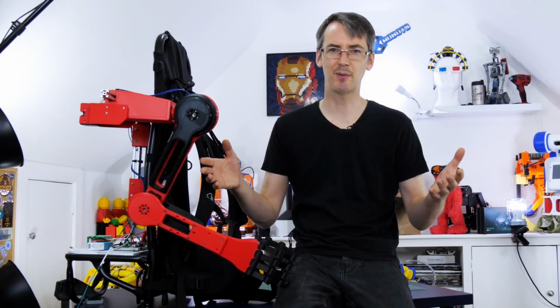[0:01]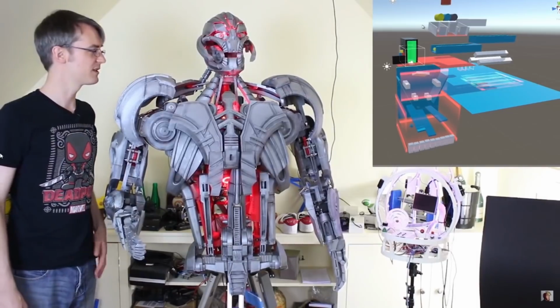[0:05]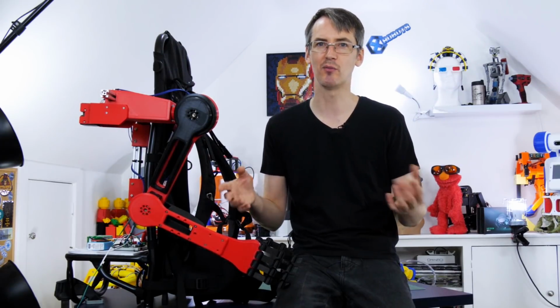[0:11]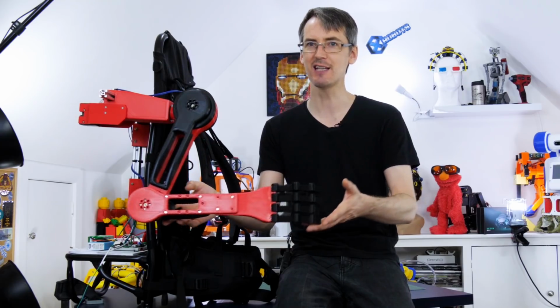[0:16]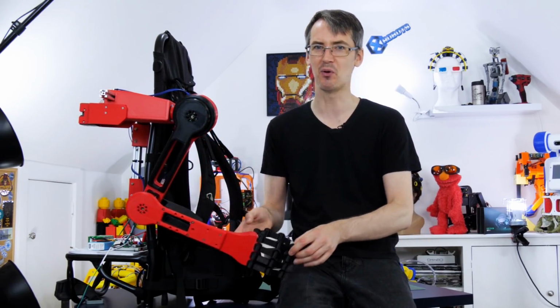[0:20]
I've been thinking about building a project like this for quite some time, all the way back to when I did Project Ultron, which some of you may remember, and that had similar intentions initially. What I've been wanting to try though is testing a proper machine learning AI to see if I could automatically control a prosthesis using body posture and the position of my other limbs as inputs.
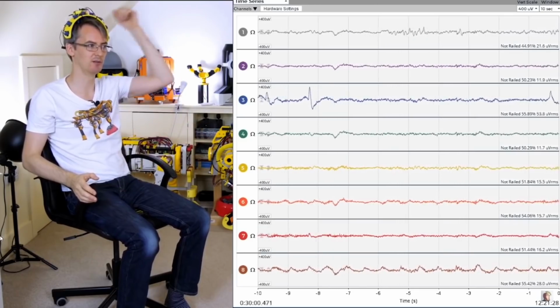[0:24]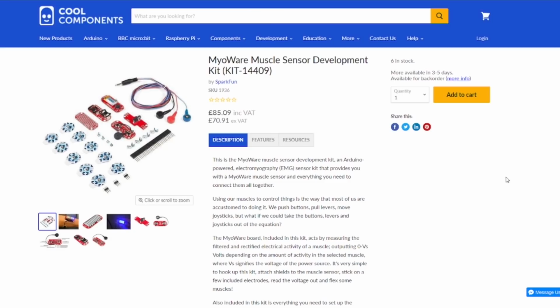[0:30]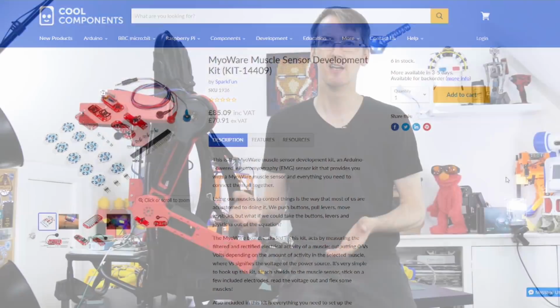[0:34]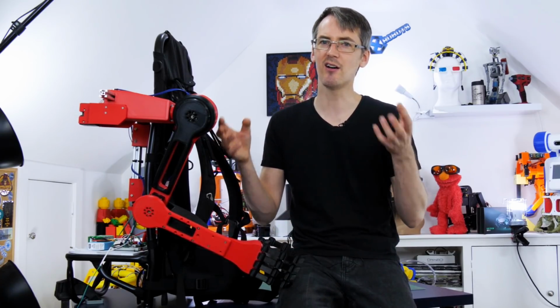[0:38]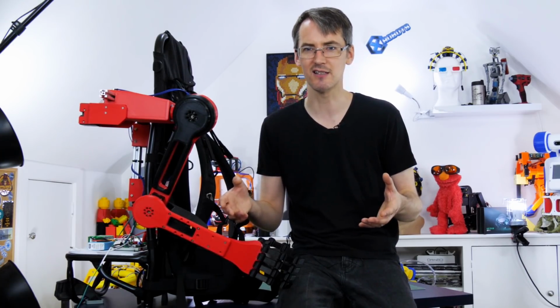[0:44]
This is because getting repeatable data from a brain-computer interface is quite tricky, without embedding electrodes in your head at least, and although there are already electromyography solutions to read muscle and nerve signals such as the MyoWare muscle sensors, it seems like machine learning could play a part. This project is highly experimental and this video is about the initial R&D. I'm intending to continue with the project along these lines after this video, and I'll talk some more about that at the end.
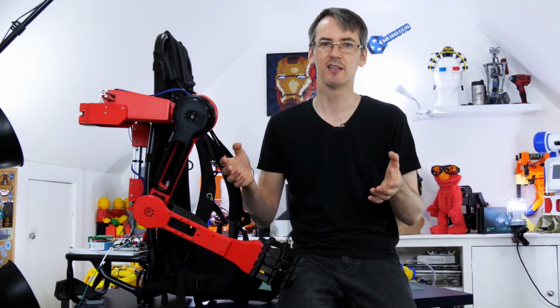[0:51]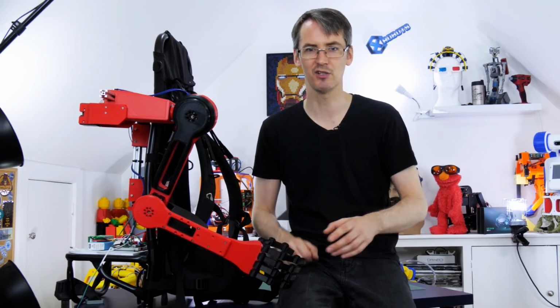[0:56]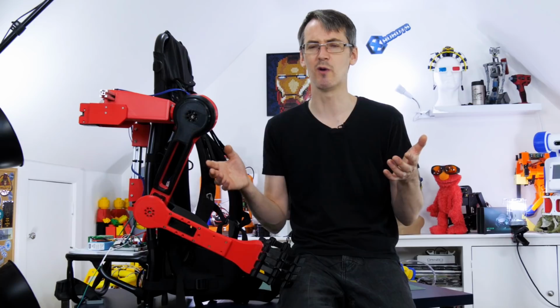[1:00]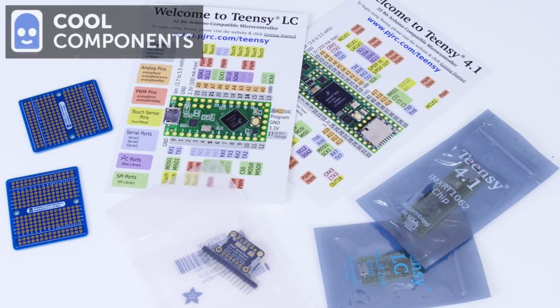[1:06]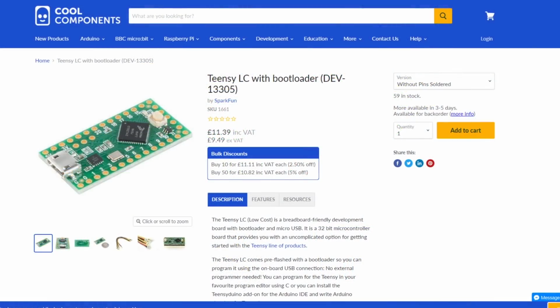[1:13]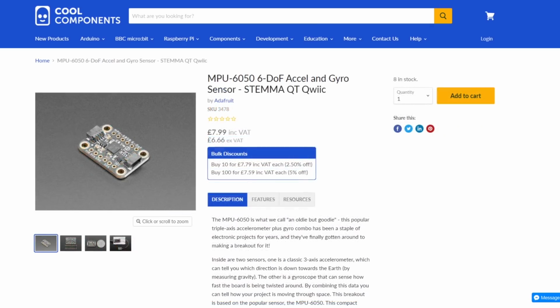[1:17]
So in order to start the project, first of all, I needed to make some sort of wearable motion capture suit so I can get all the data from my body motions into something to process it. Thanks to Cool Components for providing the electronic components for this project. This includes several microcontrollers, including a number of Teensy LCs, a Teensy 4.1, and the Adafruit MPU 6050 inertial measurement units.
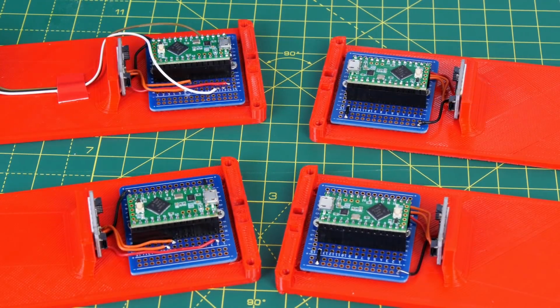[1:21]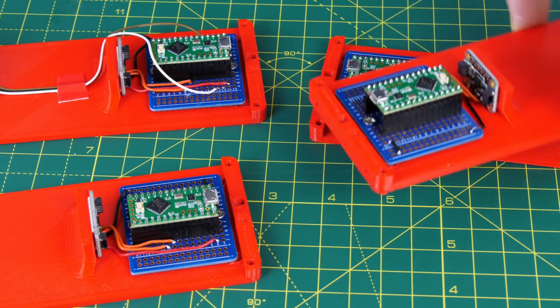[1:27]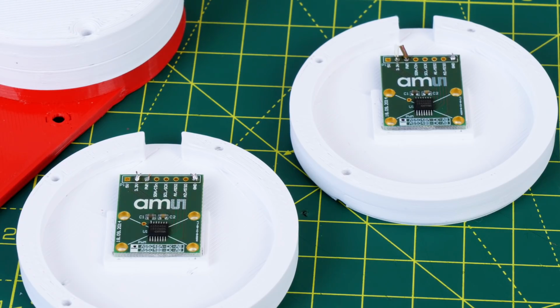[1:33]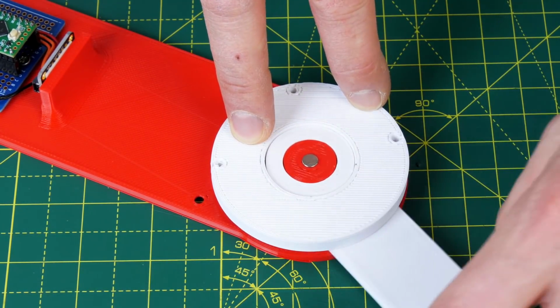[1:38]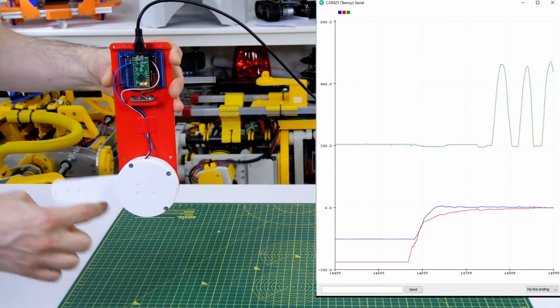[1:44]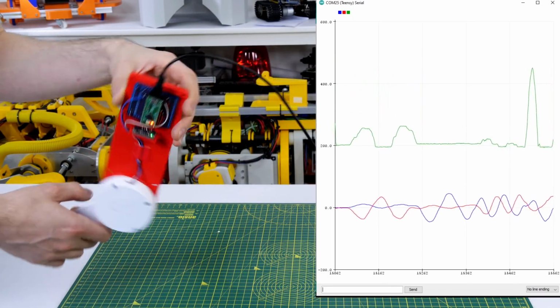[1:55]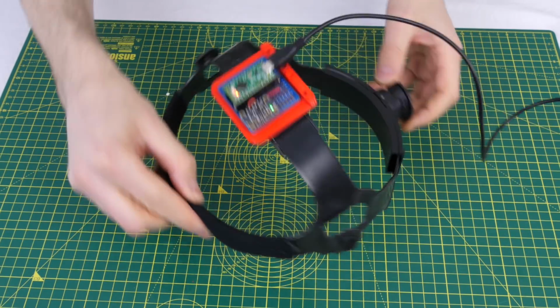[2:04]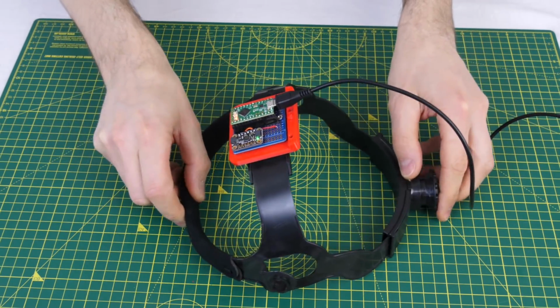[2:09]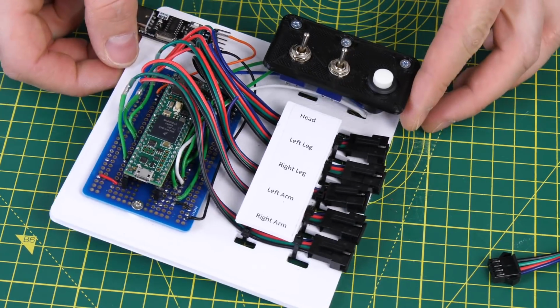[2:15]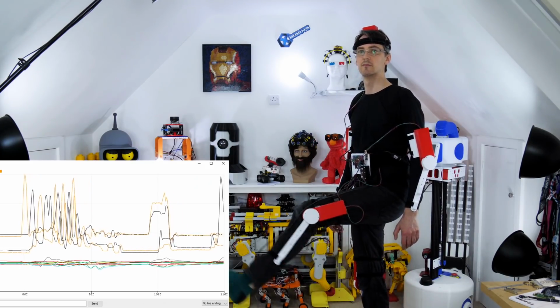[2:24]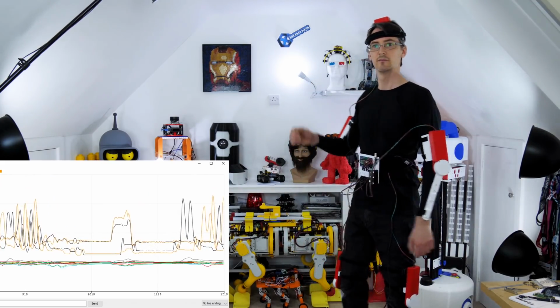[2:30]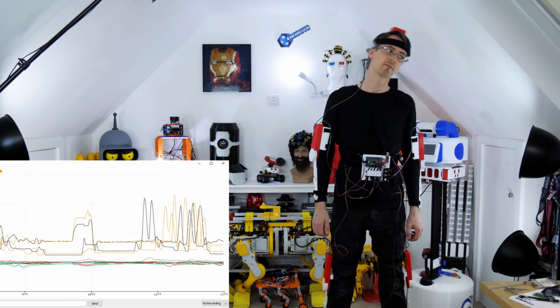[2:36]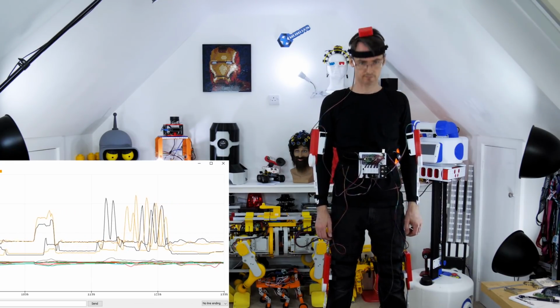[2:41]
I also need to record my head motions, so I've got the inertial measurement unit, exactly the same as the others, but without the joint encoder, attached to a headset. All of that data gets sent to the Teensy 4.1, again mounted on Core Components Perma Proto, and each one of those plugs into a connector, so that I can plug in all of the four limbs and the head. And all of that makes a rudimentary motion capture suit, which I can wear, recording the motions from all of my four limbs, my arms, my legs, my joints of my limbs, and the position of the limbs, as well as my head position. All of the data I've got in the visualizer there is coming from the Teensy 4.1, where all the data is sent. At the moment, I'm just outputting it to the serial terminal for debug.
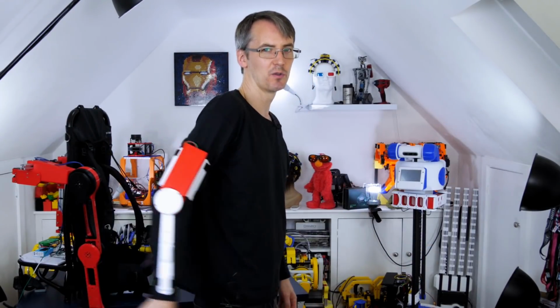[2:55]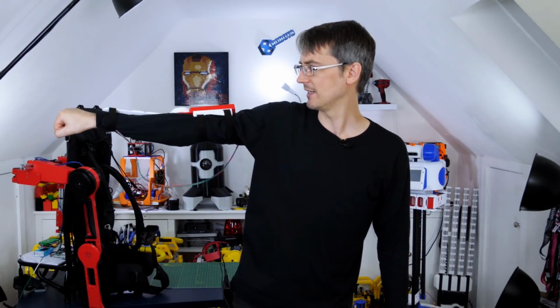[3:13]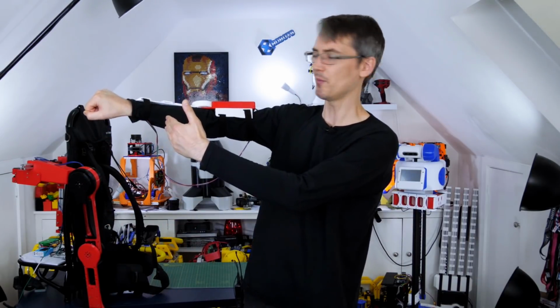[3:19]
Now, those of you paying attention will realise there's some problems with this. Of course, I'm only recording two axes in my upper arm, which are this one and this one. And of course, we also have a third one, which is rotating the arm, which I'm not recording. So we've got quite limited data there. The other issue is, if I put my arm right out, then the inertial measurement unit axis in this direction can measure that with no problem. But the other axis that's trying to measure this gets really confused if I roll my arm a little bit and then flips over and goes all crazy, because at that point it tips right up, it doesn't really know what it's doing. So we've got some caveats there and some limited range of motion we can record.
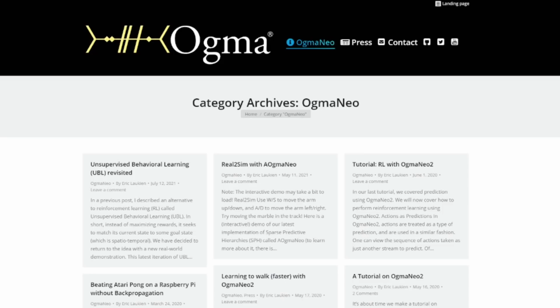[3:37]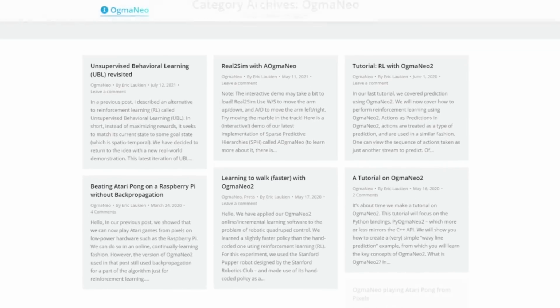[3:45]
But now we need to get all of that data and decode it with an AI to work out what my right arm should be doing essentially when it's missing from the other body motions. So I sought help from Ogma Corp, which is a startup company that makes machine learning software. Their AOGMA Neo software is lightweight, so it can run on low power devices, and there's even a version that can run on a microcontroller.
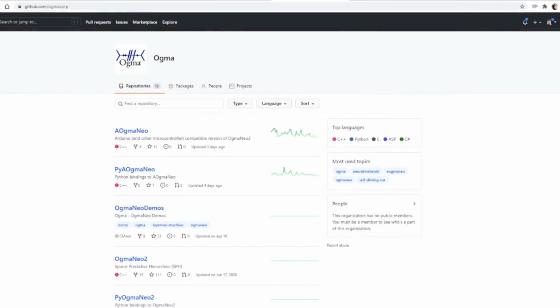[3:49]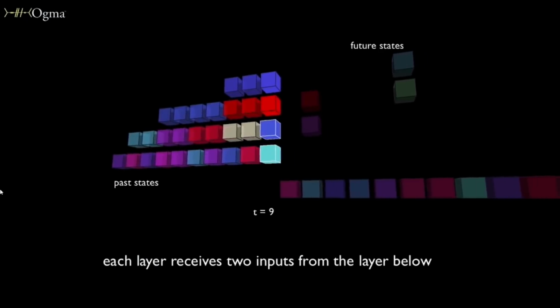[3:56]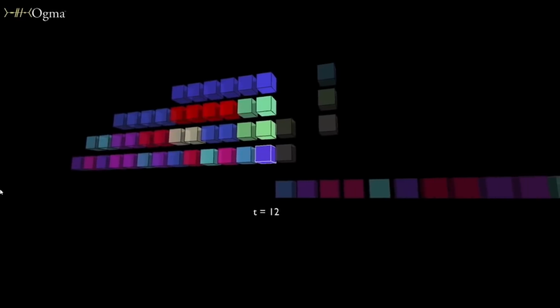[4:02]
The software is open and available on GitHub. It's free for personal use, although commercial use requires a license. Ogma Corp have built their software on neuroscience, matching the power of state-of-the-art deep learning algorithms, but with a self-organizing structure, flexibility, and efficiency found in the human brain.
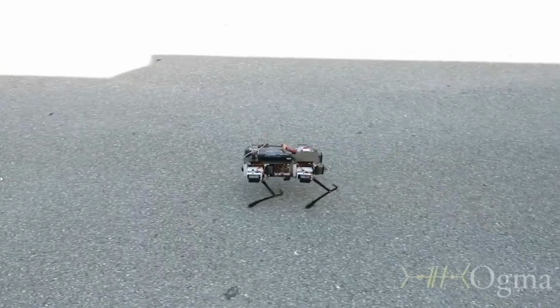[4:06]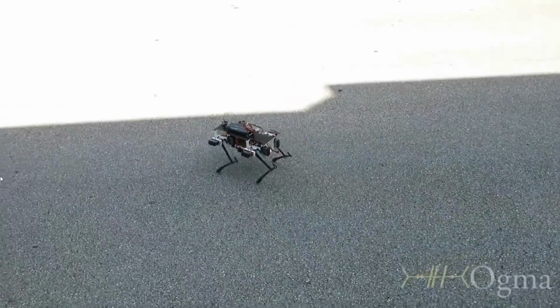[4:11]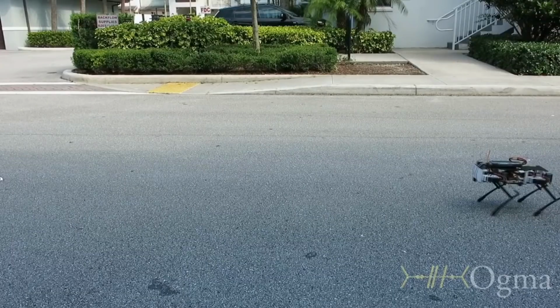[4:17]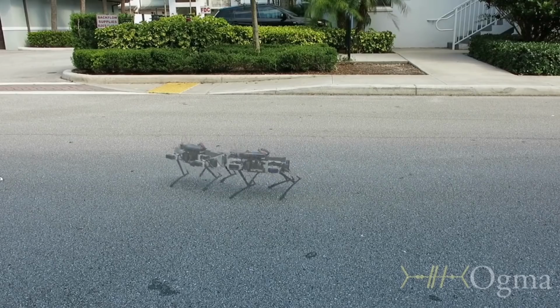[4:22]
Generally, AOgmaNeo is used for reinforcement learning. There are lots of demo videos in the Ogma Corp YouTube channel demonstrating emergent behaviour from robots using the software. This includes a robot dog learning to walk better. It's using an optical mouse-style sensor for velocity feedback, and then learning which changes to the kinematics of the robot make it go faster.
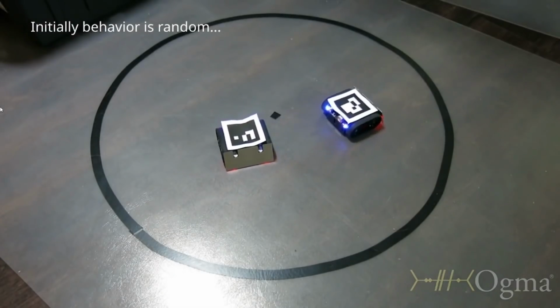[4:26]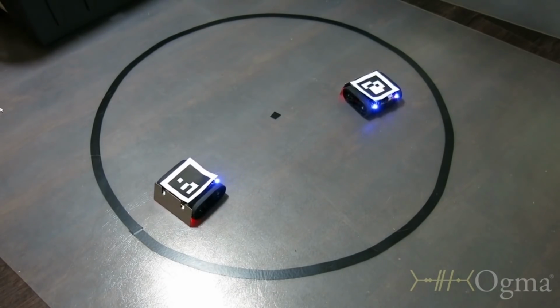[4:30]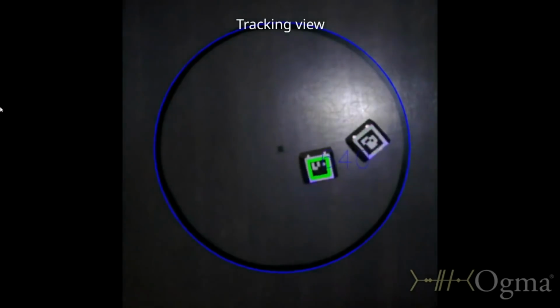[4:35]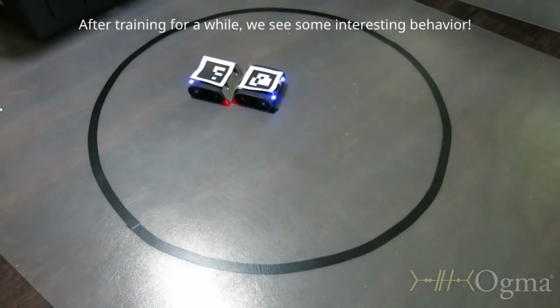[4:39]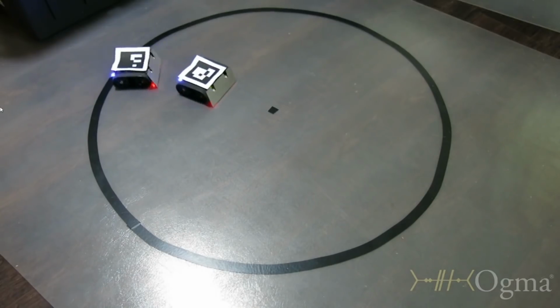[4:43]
The other great demo is a pair of sumo bots which have their positions tracked using machine vision and an overhead camera. They get reinforcement feedback when various actions take place, such as the other robot leaving the ring. Initially, the behaviour is random, but after several rounds of training, they learn how to fight and tend to try to push the other robot out of the ring.
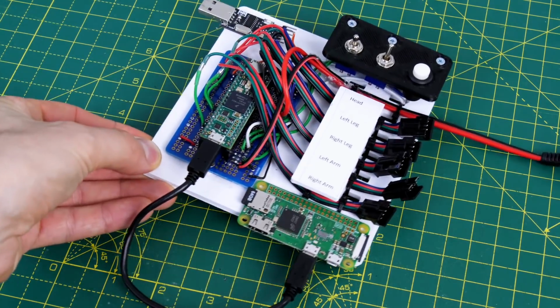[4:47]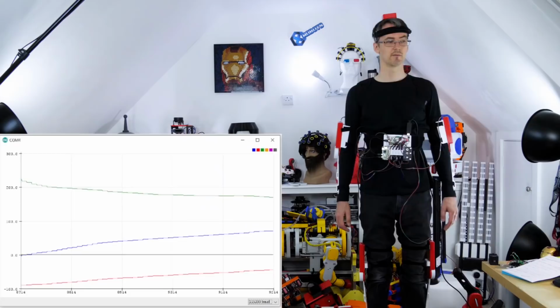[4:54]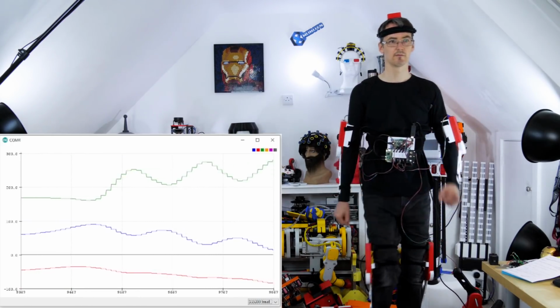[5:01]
So, I added a Raspberry Pi Zero to my electronics. This will receive the data from the Teensy over serial, process it using AogmaNeo, and send it back to the Teensy again. So with quite a bit of help from Ogma Corp, we fed the data from all of my limbs and head motions into an AogmaNeo hierarchy.
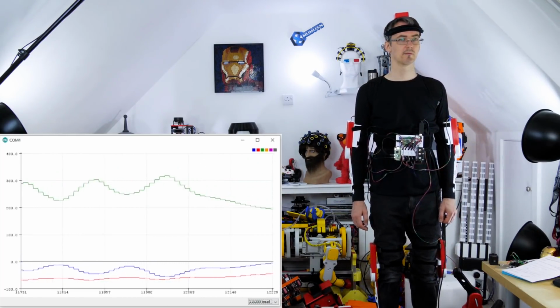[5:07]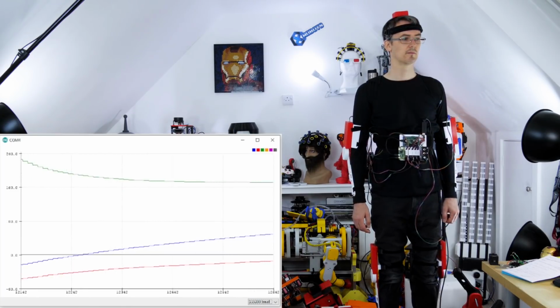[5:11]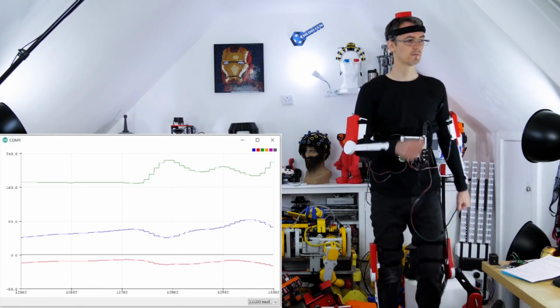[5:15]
I tried training the model by doing some fairly distinctive repeated motions, but I also spent some time during the training standing still, because we also need to train the model to understand what to do in that case. The waveform you can see is from my right arm only. The green line at the top is my right elbow joint, the red and blue lines are the two IMU axes in my right arm.
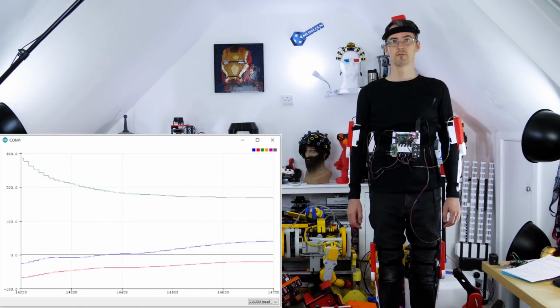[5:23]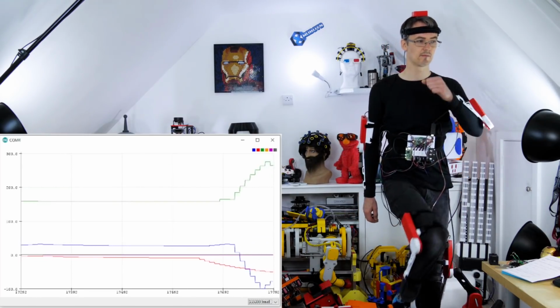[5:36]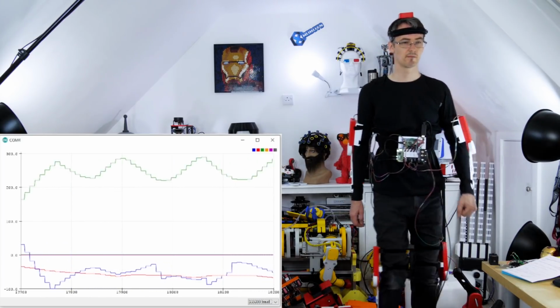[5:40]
After doing a short piece of training, I switched the system over into playback mode. This should now allow AogmaNeo to predict what my right arm should be doing, even though I'm now no longer moving my right arm. It can predict this based on my upper body motions through the training I did. And you can see that we get a very similar output to the real motions of my right arm, even though my right arm is no longer moving.
The data is quite blocky looking though, and that's because we're only running at about 10 Hz. That was about the throughput limit for the Raspberry Pi Zero running AogmaNeo, but we essentially get data that looks okay, and we can smooth the data out later with some post-processing. You'll also notice a few random spikes here and there, but we'll filter these out later too.
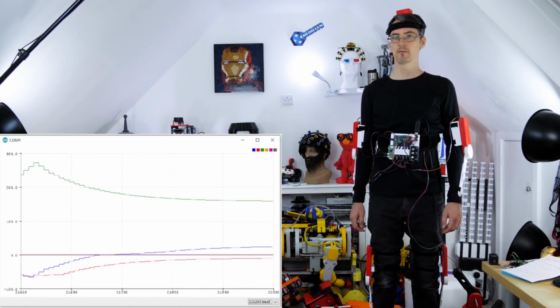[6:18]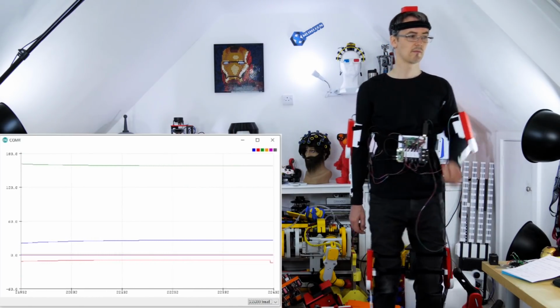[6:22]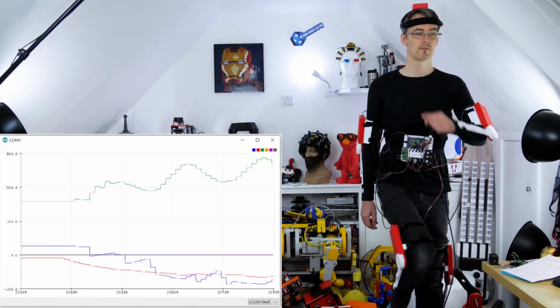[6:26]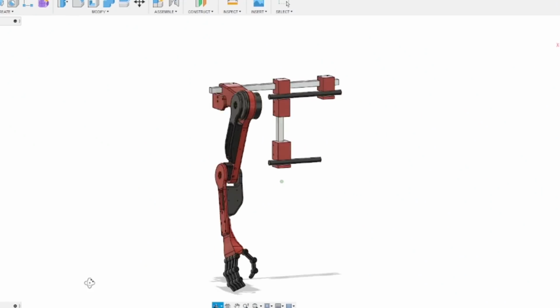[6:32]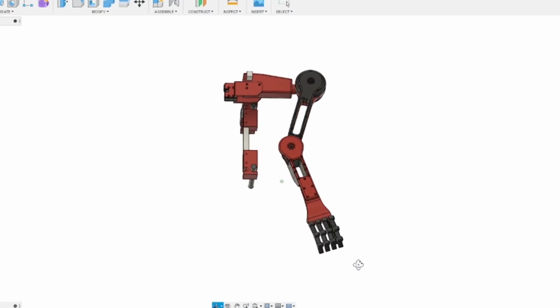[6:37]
If I stop moving, then the predicted right arm data should settle at a rest position, just as we trained it. And if I start the motions again, then off it goes. The next stage, of course, is to build an actual robot arm I can wear on a backpack and see if the output motions actually match what my right arm should be doing.
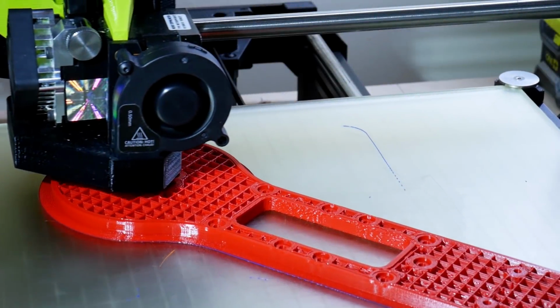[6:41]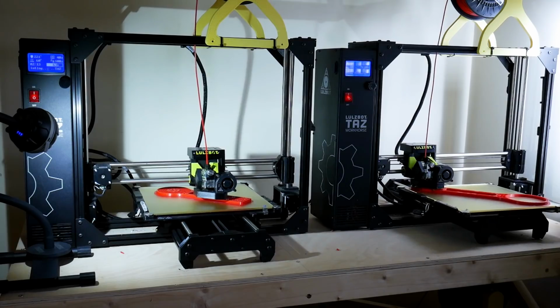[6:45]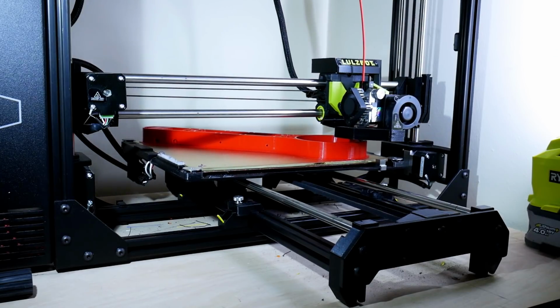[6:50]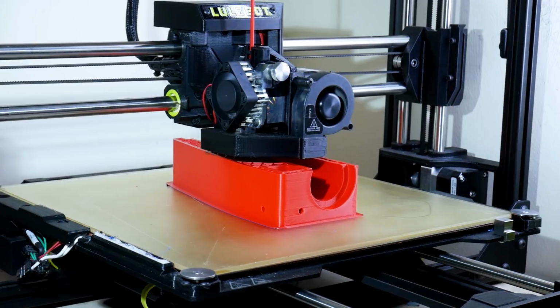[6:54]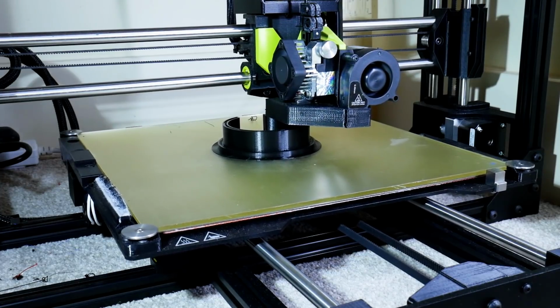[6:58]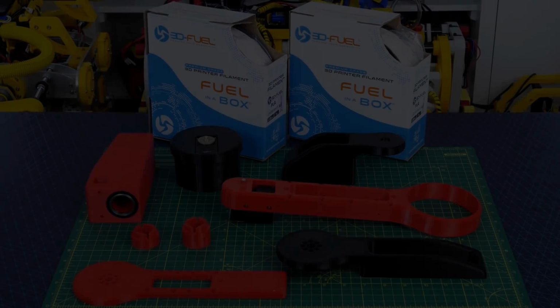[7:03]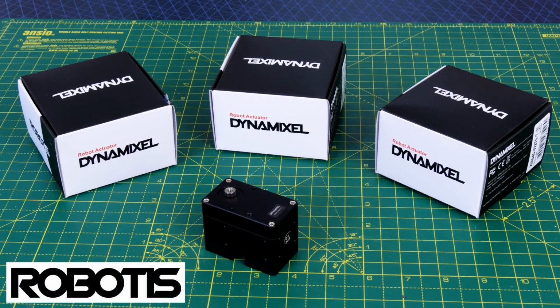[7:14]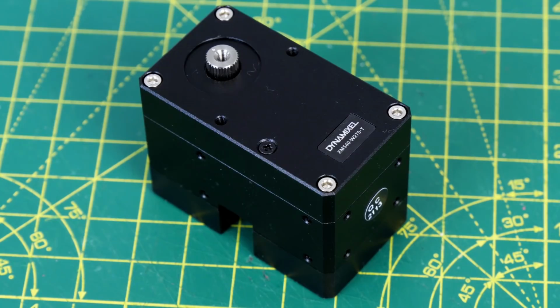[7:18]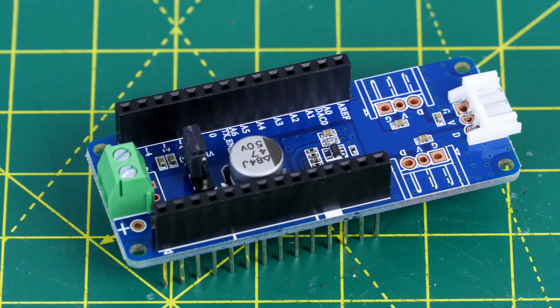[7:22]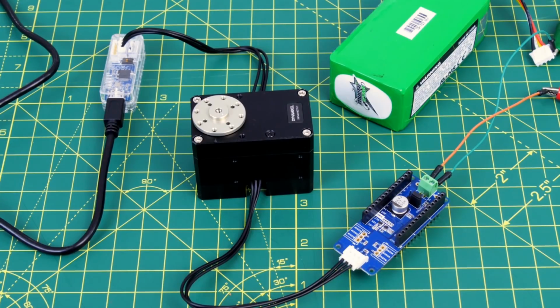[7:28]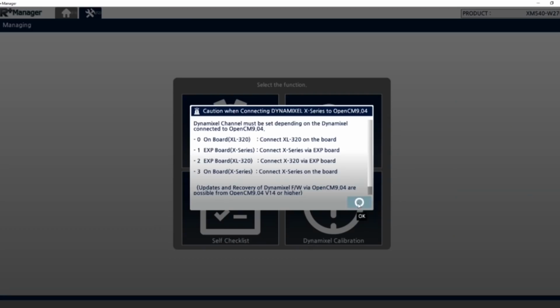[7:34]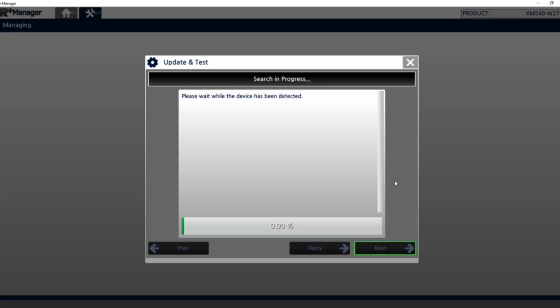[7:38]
And also thanks to Robotis for the Dynamixel servos that I'm using in this project. I've got three XM540-W270-T servos, and I've also got the MKR shield for Arduino, which runs at 3.3 volts. The servos can all be attached together on one serial bus, but first of all we need to power them up, attach the USB serial interface, and I'm using R+ Manager here to go and address them all uniquely.
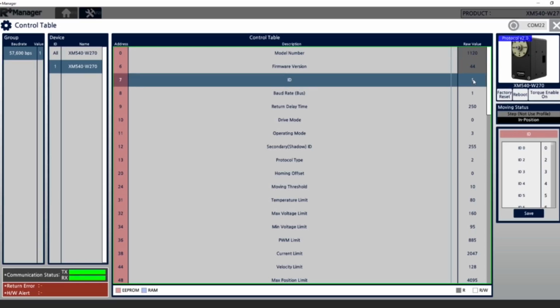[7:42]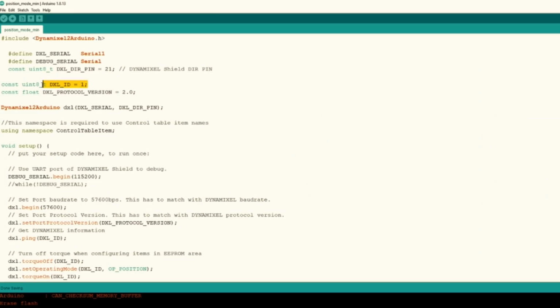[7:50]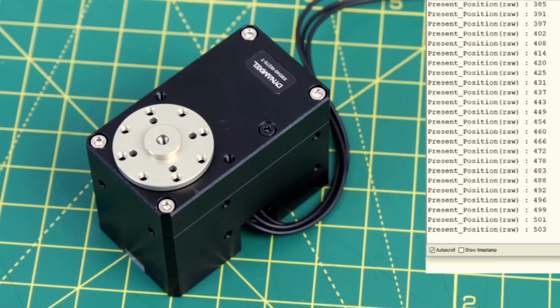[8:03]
We can alter various parameters in the servo, but the main one I'm interested in is giving them a unique address so that we can address them all individually and give them all individual motions. Once that's done, it's very easy to control them with the Arduino code, and there are examples provided with a library. We can give them the direct angle we want to turn them to in degrees, as well as the velocity, and this is very useful because the inertial measurement units already output their data in degrees.
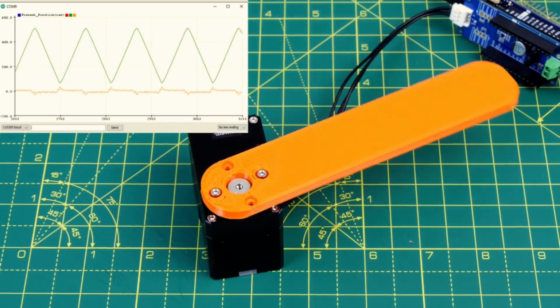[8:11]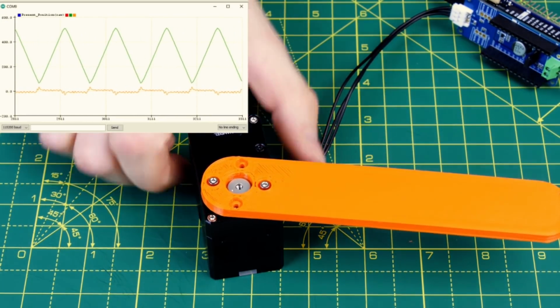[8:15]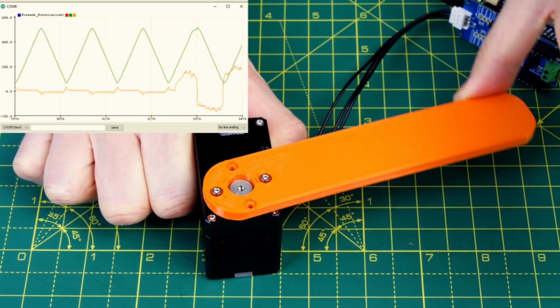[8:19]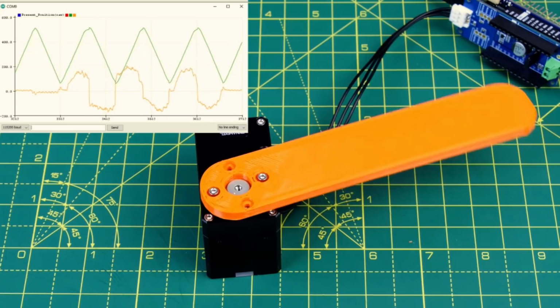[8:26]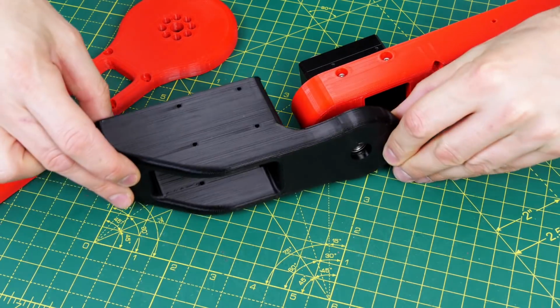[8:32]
We can also read various data back from the servo, including the actual position it's at, and also the current consumption. Here my green line is where the servo is moving, and my yellow line is the current, and you can see as I load the servo, the current increases, and that's very useful for robotics to detect collisions and detect loading. I fitted the servos into both the elbow and one of the shoulder axes for the robot arm.
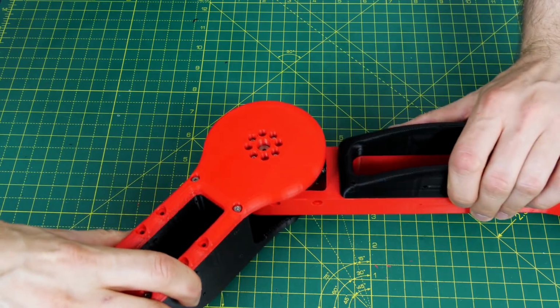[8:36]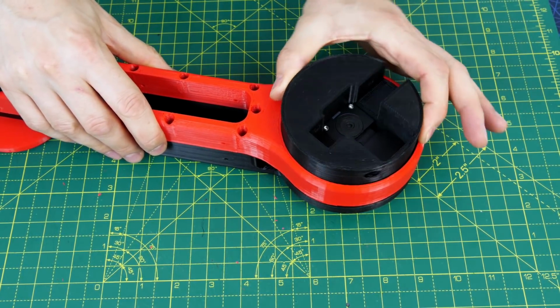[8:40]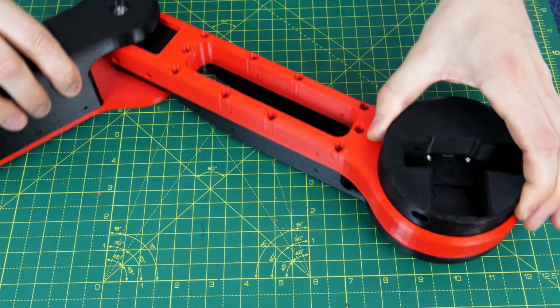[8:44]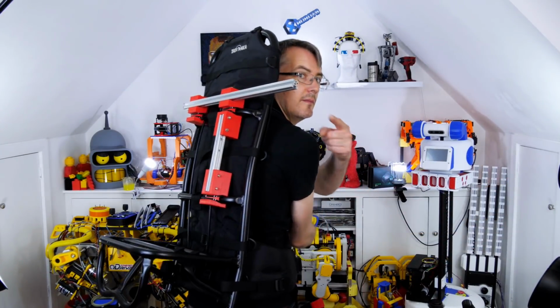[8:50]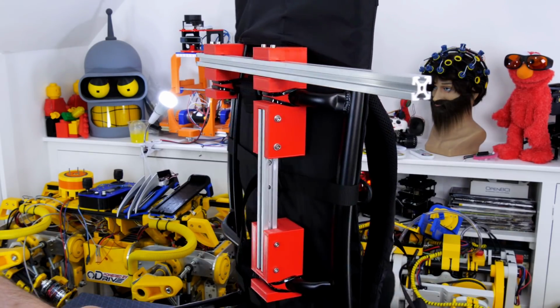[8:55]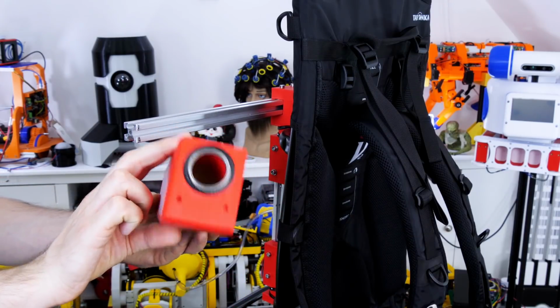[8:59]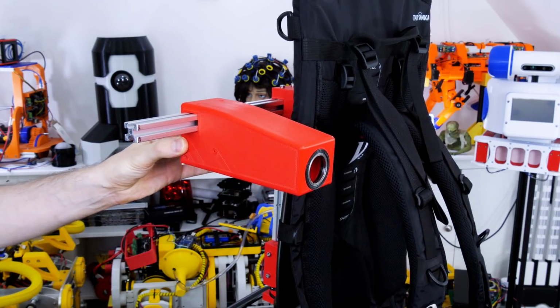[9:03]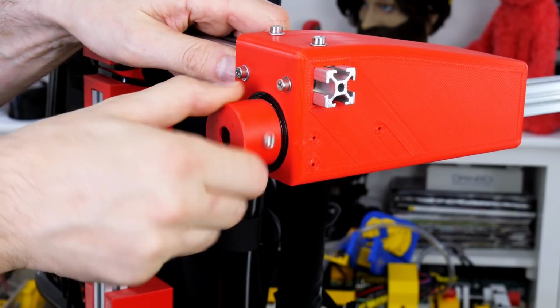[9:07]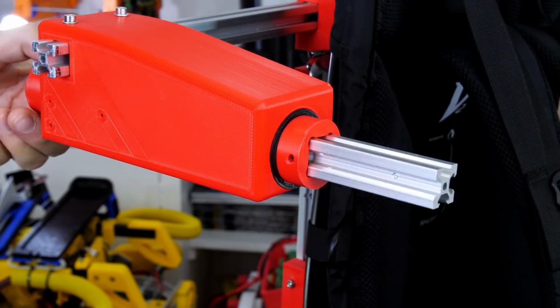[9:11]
That looks pretty good, but we need something comfortable to mount the arm on. I found this frame rucksack on Amazon, and I've made an extra brace on the back with some 2020 extrusion, so we can fit the other arm axis, and it's really comfortable to wear and easy to support. We need one additional axis, and that's going to slot onto the 2020, and that will be the axis that lifts outwards. So, with some more 2020 to hold the other two arm axes, and some 3D printed pieces that fit into the bearings, we're almost ready to go.
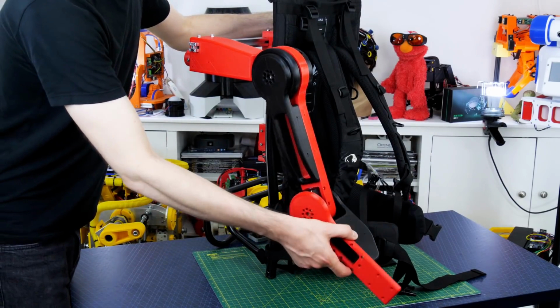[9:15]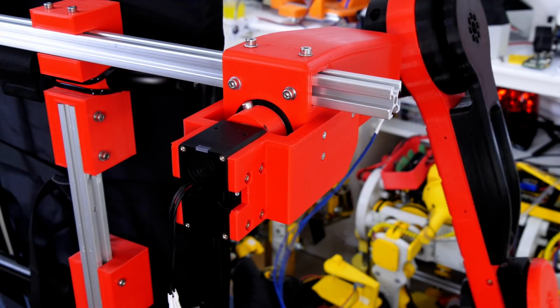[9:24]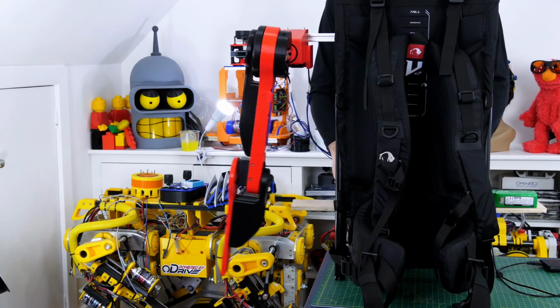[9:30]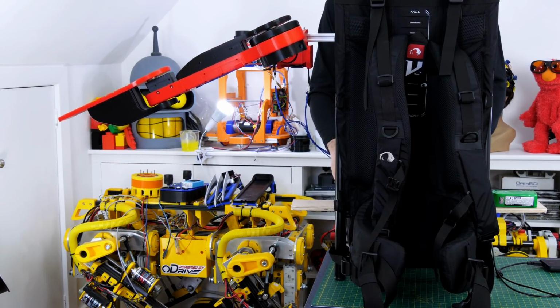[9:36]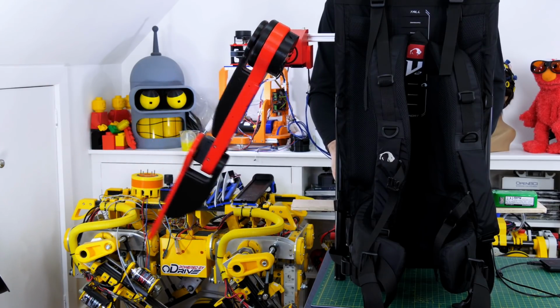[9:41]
So now we have the same mechanical axes to output the data to as we're recording with the two IMU axes and the elbow encoder. The Dynamixel servos I have are really strong, so I've just put these straight on the hubs for the joints, and you can see that servo's more than capable of lifting that arm out, and I'm just controlling this manually for now with an analog pot attached to the Arduino and mapping those positions to the servo. But that seems to be absolutely no problem at all, and the servo's more than powerful enough.
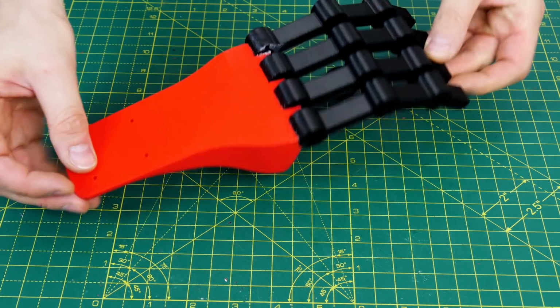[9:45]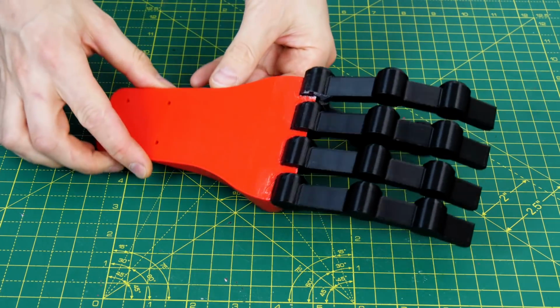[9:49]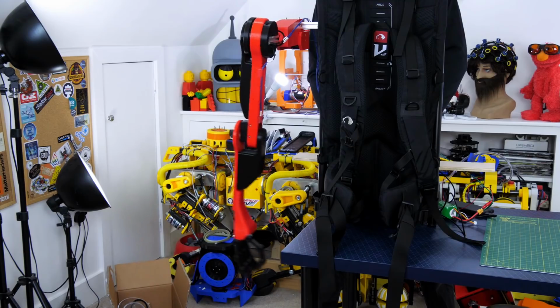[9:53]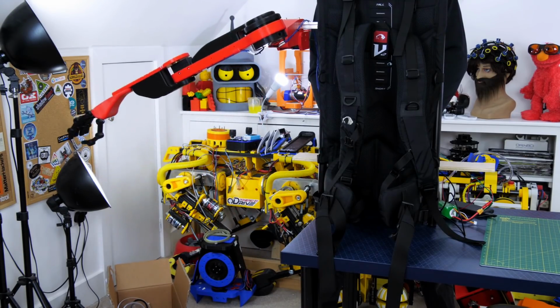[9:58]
I thought I should add a hand so it doesn't look too weird and the arm doesn't look too short, so I've just made a static hand which doesn't have any motors in. That makes the arm a more natural length, and we can see there's still absolutely no problem with that one Dynamixel servo lifting the whole load of the arm out at quite a good velocity.
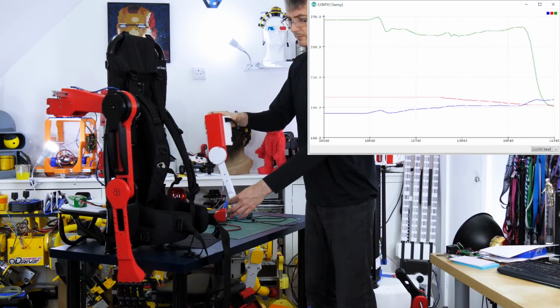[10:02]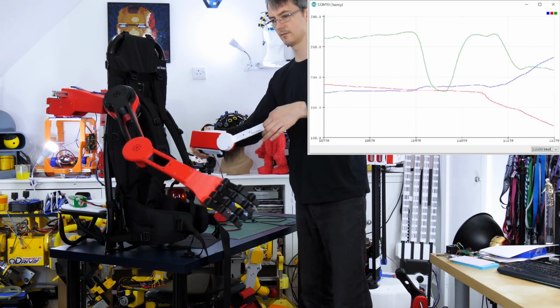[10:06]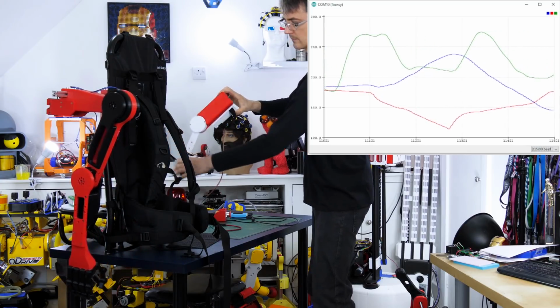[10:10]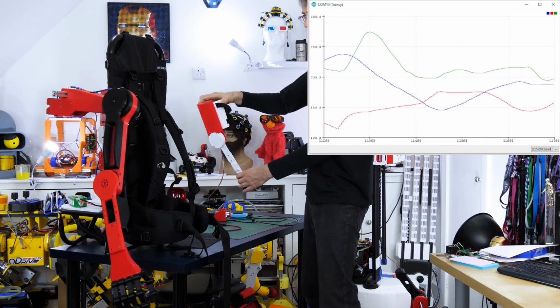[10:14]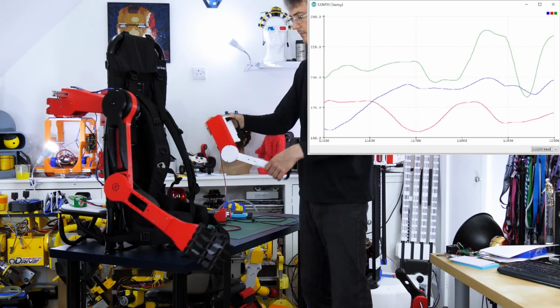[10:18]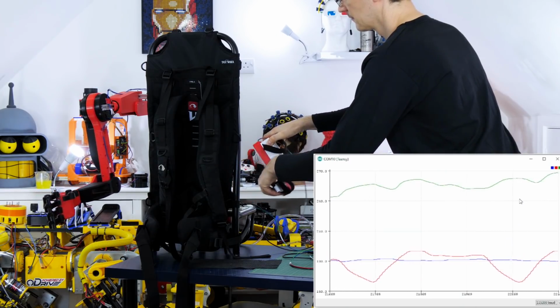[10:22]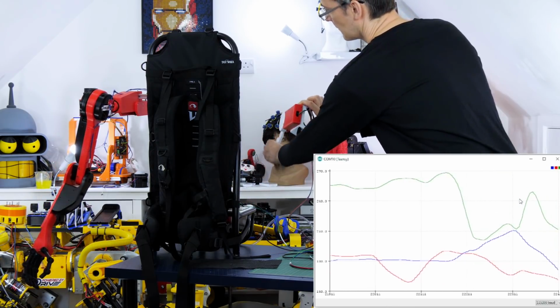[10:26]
So, I thought I should do a quick mapping test just to check all of those angles look okay. We're actually running AOgmaNeo in training mode here, so there is some lag from the training happening, and of course that's only running at 10 Hz. I've put quite heavy motion filtering on though, so we can see we get nice smooth lines now and the arm's not too jerky. We may also need some additional motion filtering when we put AOgmaNeo into playback mode to get rid of any spikes and anomalies in the data, but it looks pretty good for now.
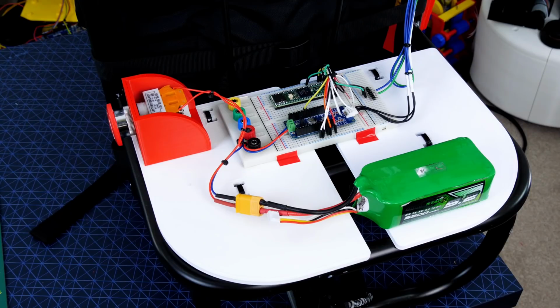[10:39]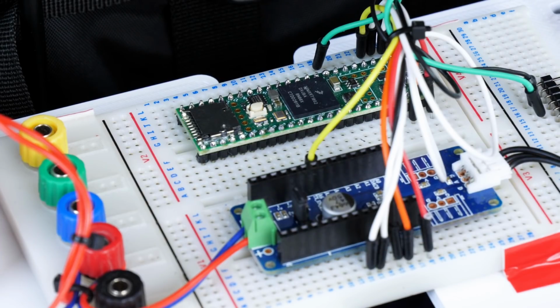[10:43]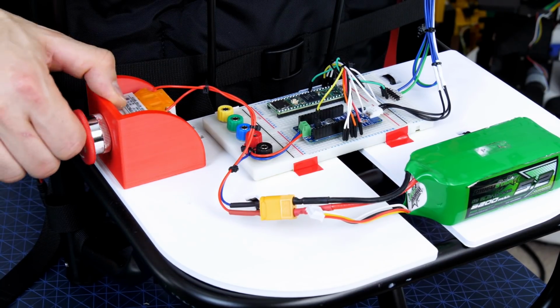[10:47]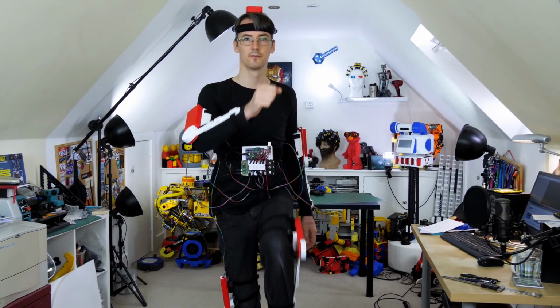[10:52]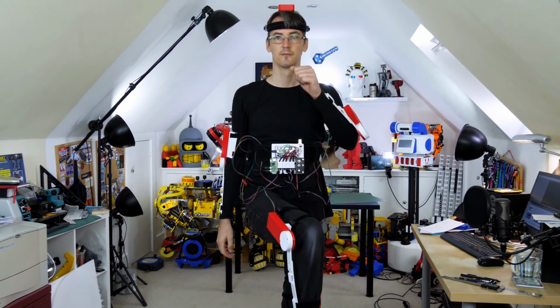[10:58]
I have set up some constraints on the arm as well, so I can't hit myself with the arm, and I can't blast past all the end stops and pull all of the wires out. I mounted the electronics on the backpack, including a Teensy with the Arduino MKR shield, and also an emergency stop that cuts power to the Dynamixels that I can reach with my left arm. So now let's do some training and see what the output from the arm actually is, and if it matches my right arm motions without the sensor on my right arm present.
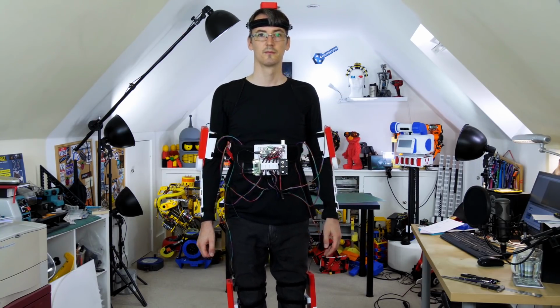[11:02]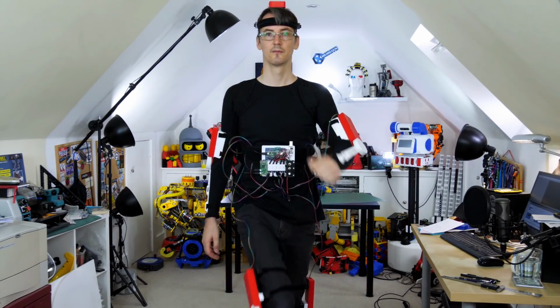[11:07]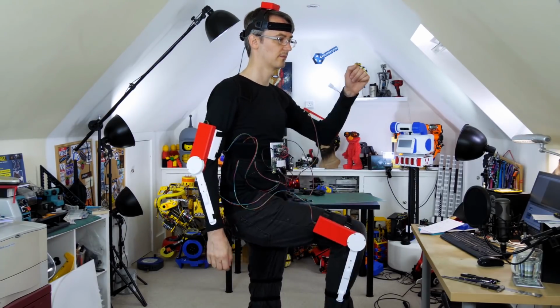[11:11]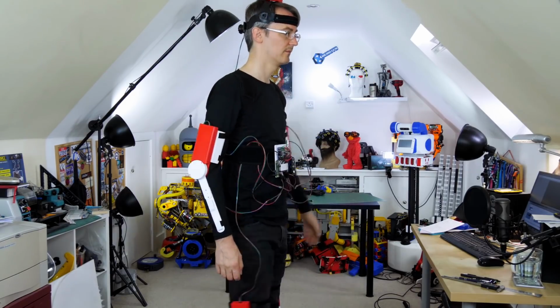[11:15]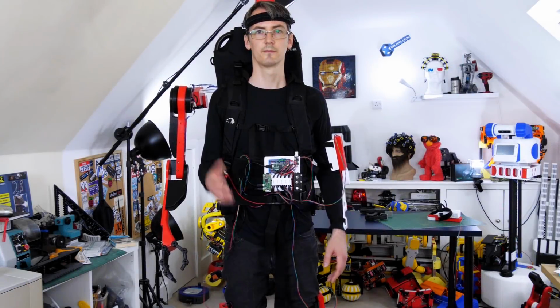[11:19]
So I went through some quite distinctive poses, again with standing still in the middle, and what you see in this clip is the only training I actually did from fresh. So only a few repetitions, around 30 in total, over probably only a couple of minutes training. So now let's put the arm on.
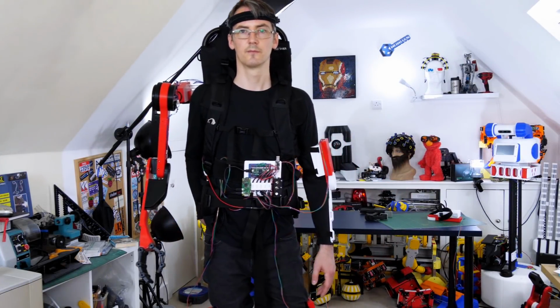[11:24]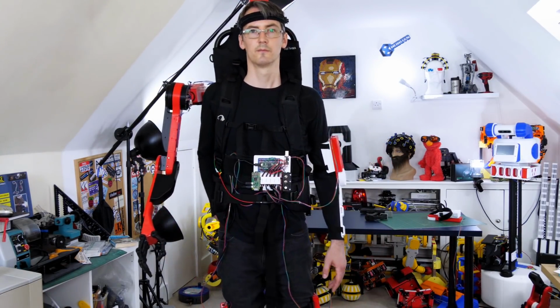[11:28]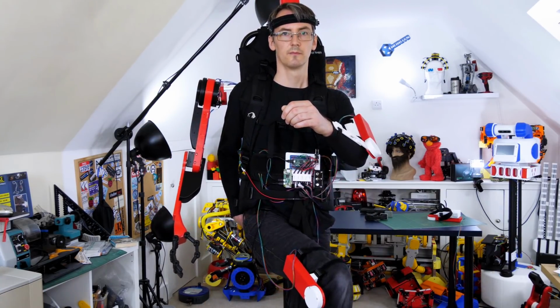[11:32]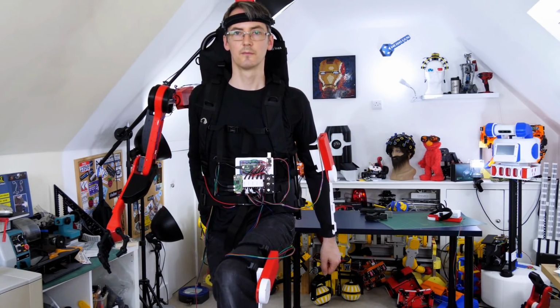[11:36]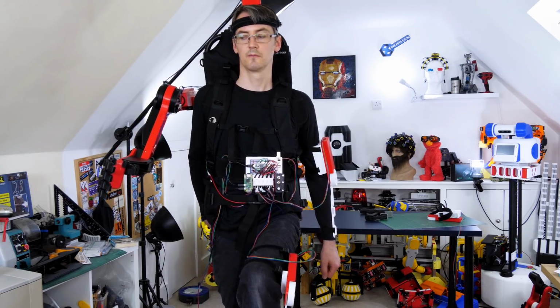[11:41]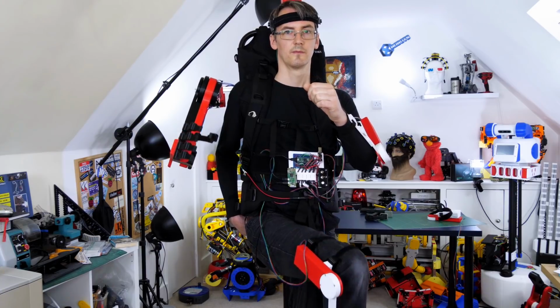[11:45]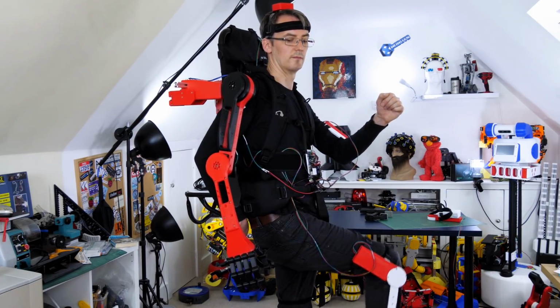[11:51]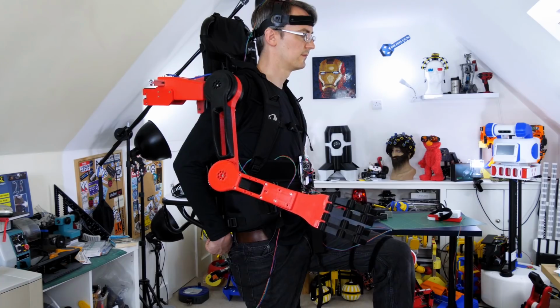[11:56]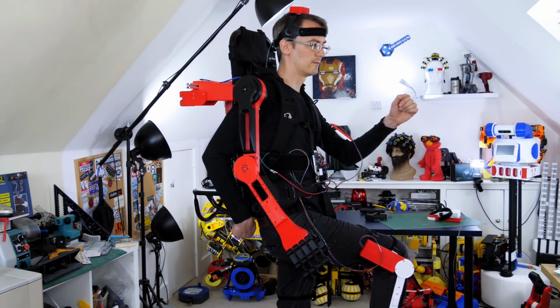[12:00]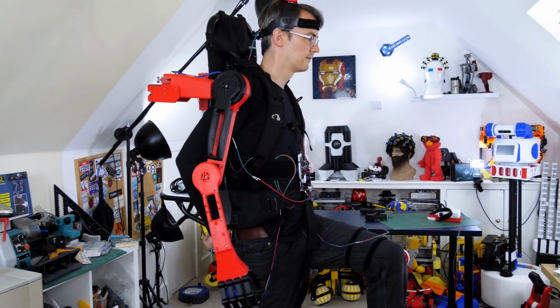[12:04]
Now you can see the sensors are missing from my right arm and just not connected to the electronics. And apart from a small amount of unexpected emergent behaviour, the arm actually does what it's supposed to do. Now you've already seen that AOgmaNeo is quite a lot more responsive than this, but I have got very heavy filtering on. And that's why there's a slight lag and a delay and the arm moves very slowly. But it does actually move into the correct position, provided I strike the right pose that I did in the training. And we should be seeing it raising, so I'm doing opposite limbs with my opposite right and left leg. It's actually quite difficult to strike the same pose without using my right arm and get it exactly the same as it was in the training, but nonetheless it's quite weird seeing the fake right arm raise up when it should.
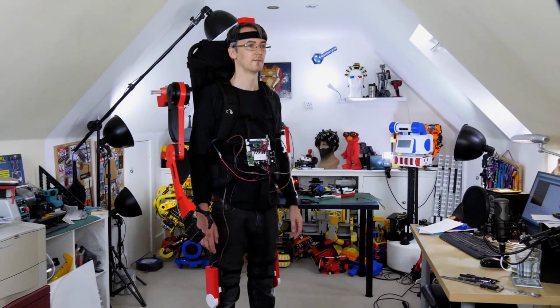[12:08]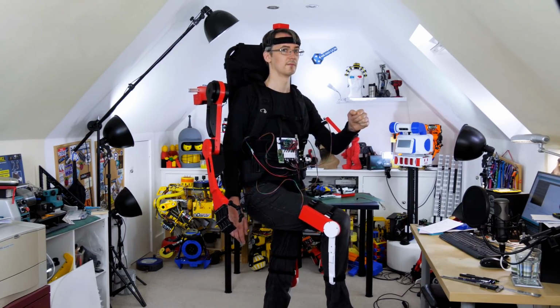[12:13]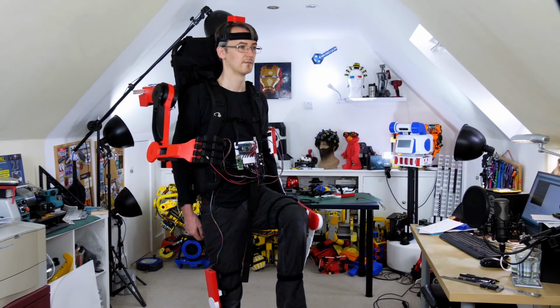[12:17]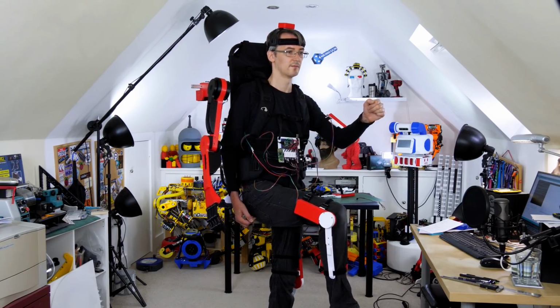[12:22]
I want it to be more responsive than that though, so I've turned down some of that filtering, and now we can see that the arm actually moves a lot quicker. So that feels like it's a bit more natural, although I still need the heavy filtering to get rid of some of the spikes in the output data from AOgmaNeo.
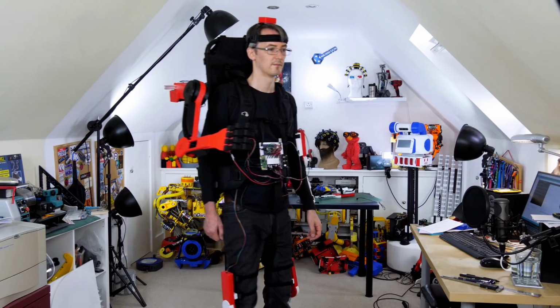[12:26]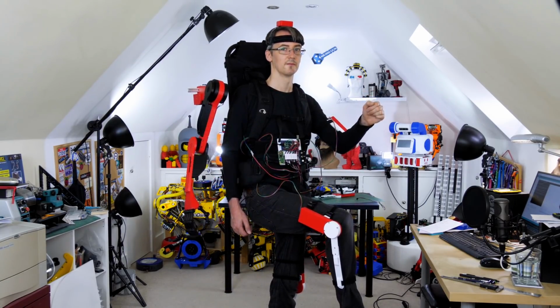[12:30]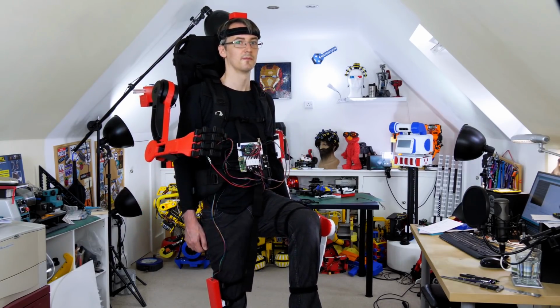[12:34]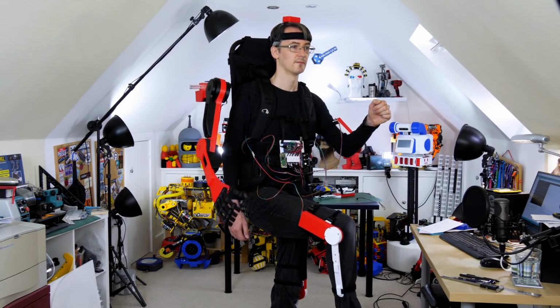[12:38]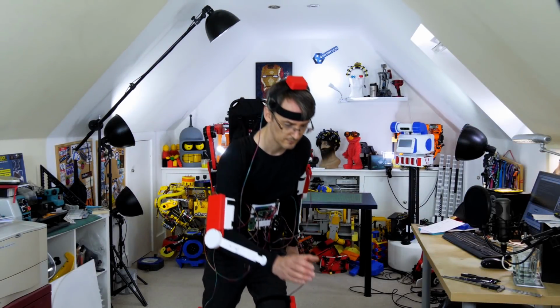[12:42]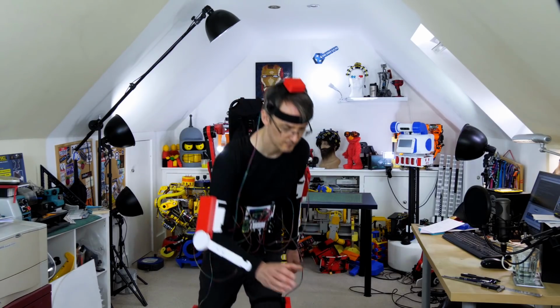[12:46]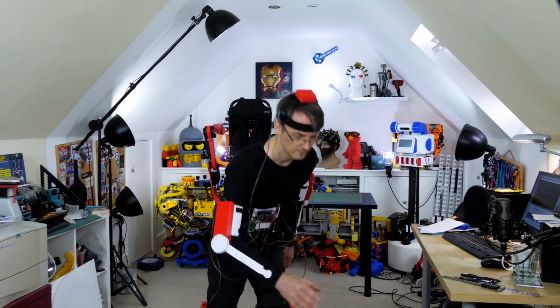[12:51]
I thought I'd try and train it for something useful next, so I did some training posturing as if I was going to pick something up. And again, I only did a short amount of training, probably only 30 to 40 repetitions over a couple of minutes.
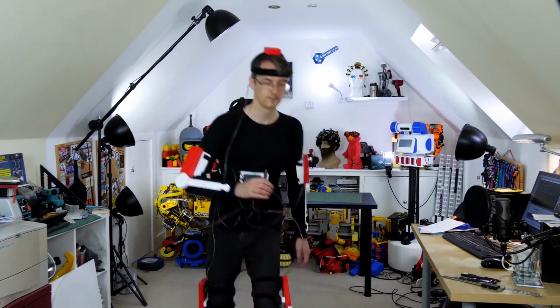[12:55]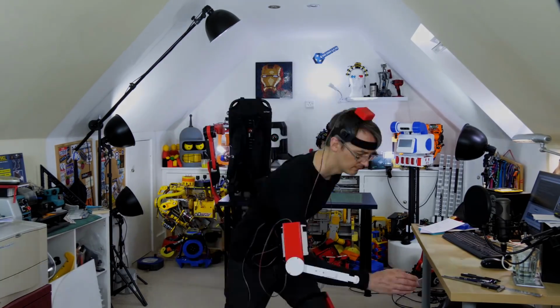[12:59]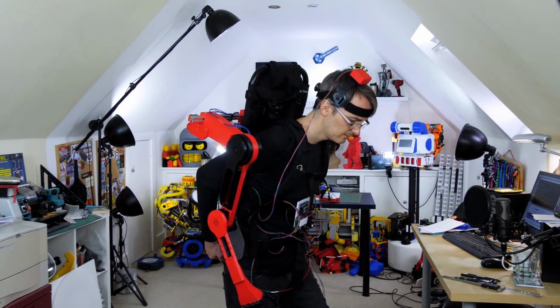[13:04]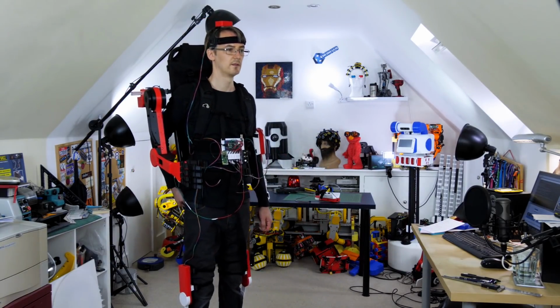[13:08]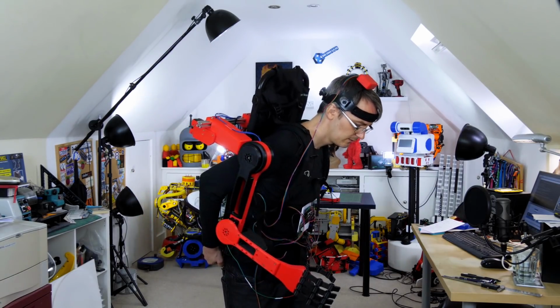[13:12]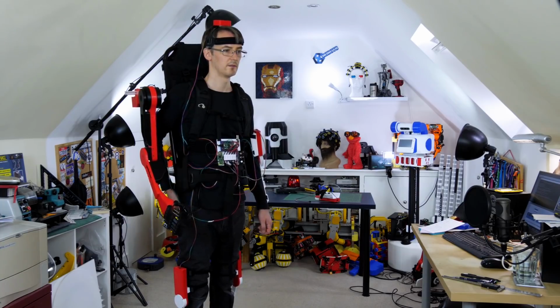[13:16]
This one doesn't work quite as well in playback. It does the best it can, but of course we've got that missing axis in rotation of the arm which I'm not recording, and the arm isn't capable of moving there. So it's actually pretty tricky for the arm to posture by moving across to the left of my body in the same way I did in the training.
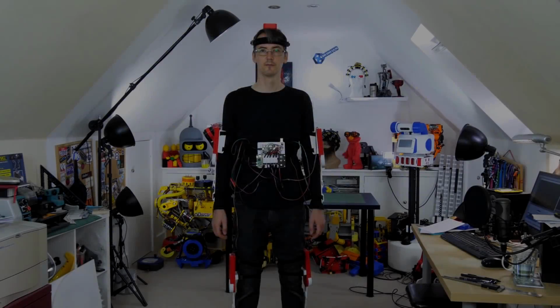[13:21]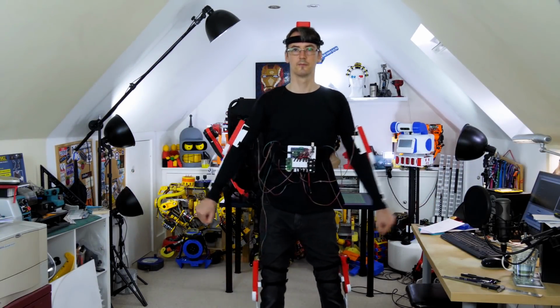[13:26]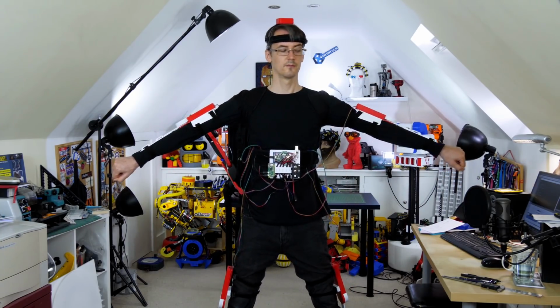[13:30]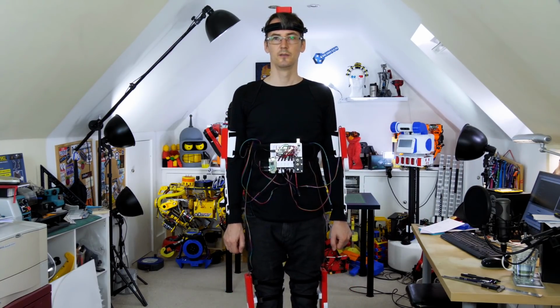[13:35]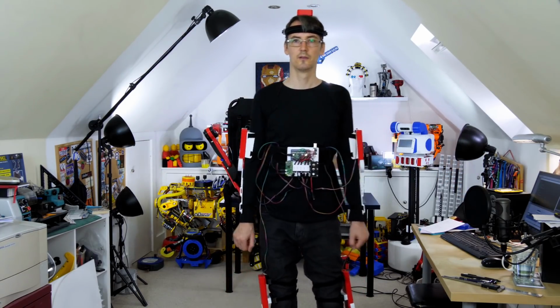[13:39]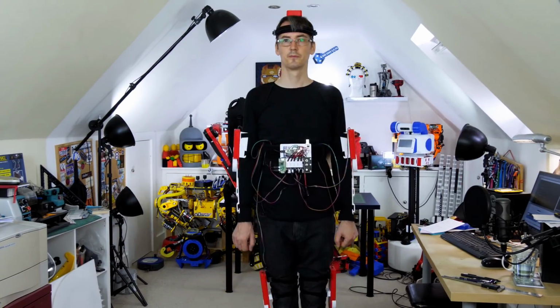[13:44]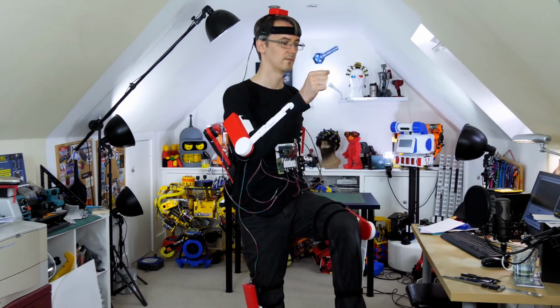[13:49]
But the concept won't be much good unless it can remember different sets of outputs based on different sets of inputs. So this time I'm training from scratch again, and I'm doing two different body postures which have distinctly different right arm outputs and distinctly different body motion inputs. One of those is just making a star shape, as you can see here, and the other one is the previous pose raising my alternate left and right limbs. And I did quite a few more repetitions of this over only a few minutes though.
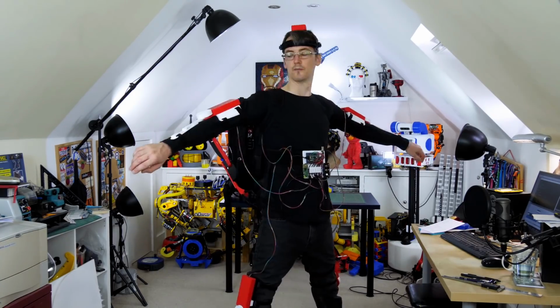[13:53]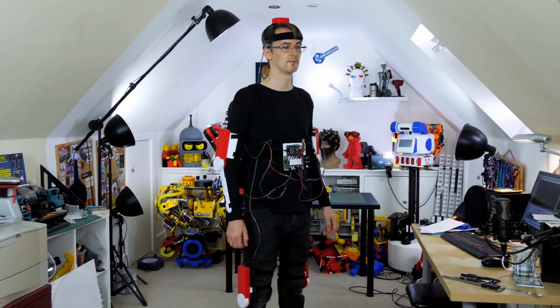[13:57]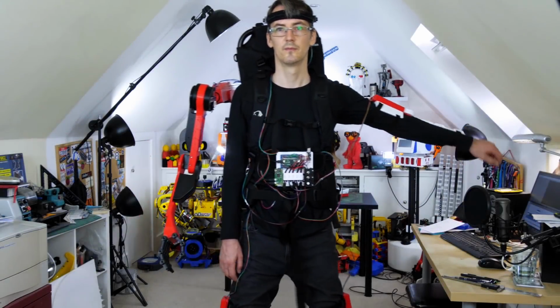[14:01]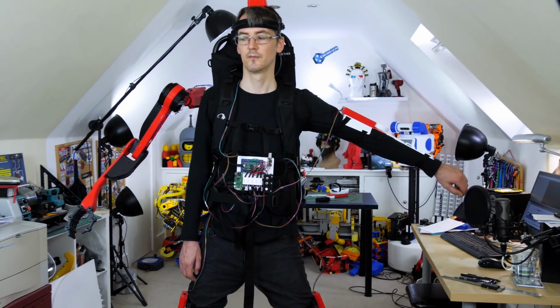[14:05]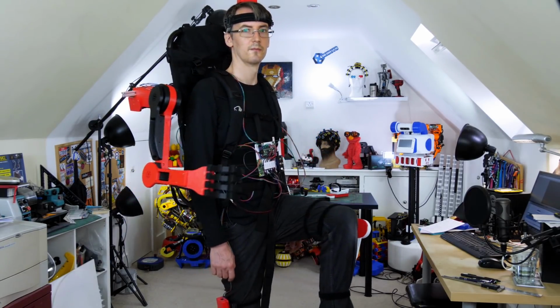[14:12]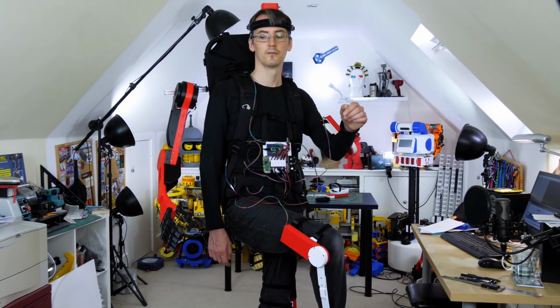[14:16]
Now, it's important to remember what I said some of the problems were with my inertial measurement units and how they're mounted on my arms when I move my arms out. So here we are in playback mode, again with the sensor removed from my right arm and my right arm not moving. And we can see initially that the arm seems to copy the correct motions that I did in training. So here we've got the opposite limbs, and that seems to work pretty well as it did before.
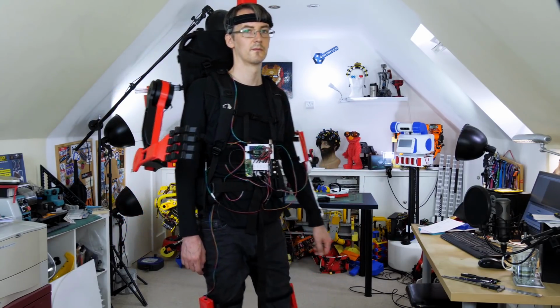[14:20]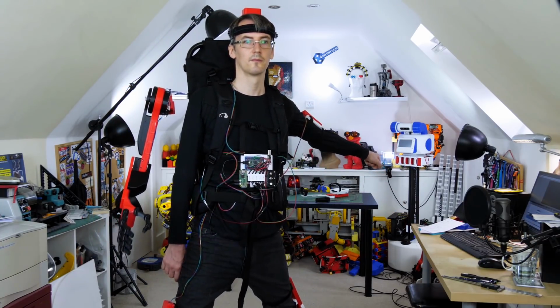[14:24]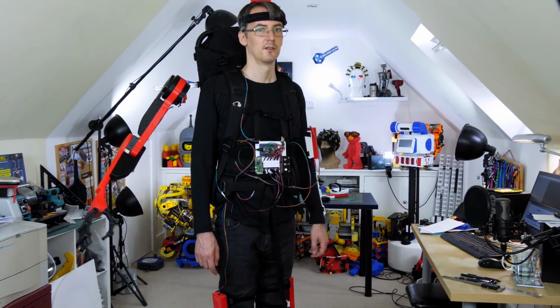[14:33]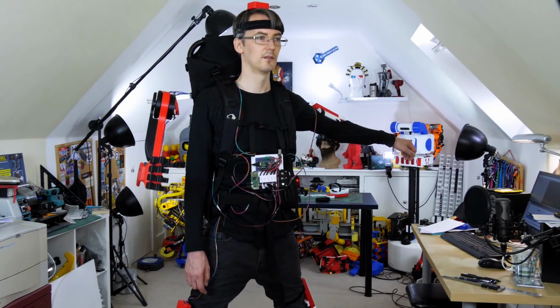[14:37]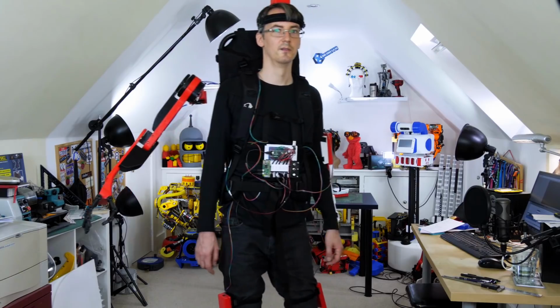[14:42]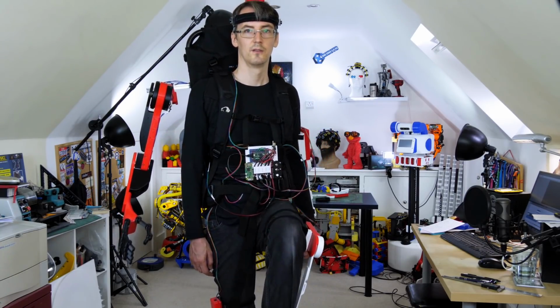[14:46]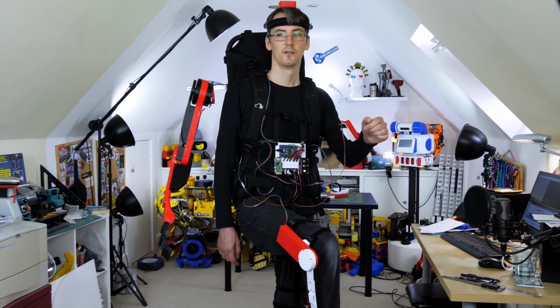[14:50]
And the arm's quite responsive. Let's try that star motion again, but we can see something very strange is happening. But eventually it gets it. But if you look at the IMU on my left arm, you'll see it's not quite level. Let's try that again. Yep, it's all in that left arm IMU to make it the same as it was, of course, in the training. And that's one of the issues I've got with the data that I'm collecting, which of course will affect the training for AogmaNeo.
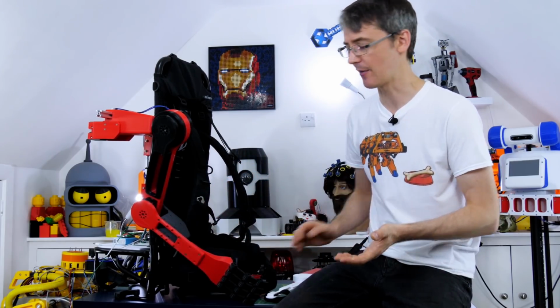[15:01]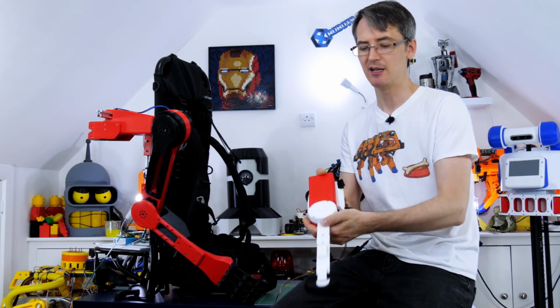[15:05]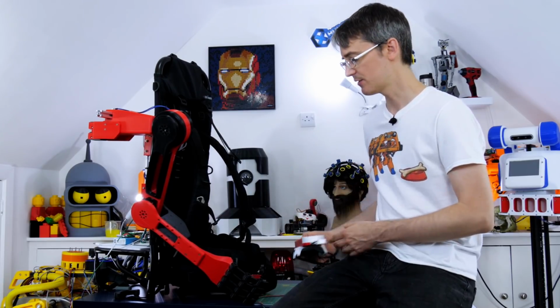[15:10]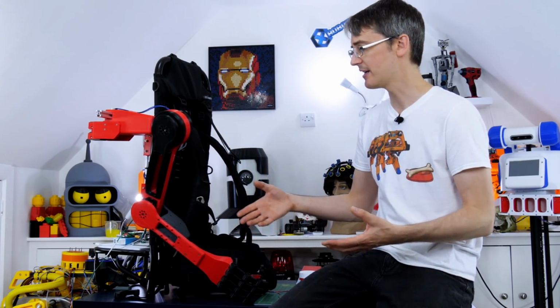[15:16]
So this has of course been a really rudimentary start into what is probably an overambitious project. I'm pretty impressed with the motions and the data we get out though, considering the data that's going in. These things don't make the best motion capture suits, as I've described. It's really highly subjective depending on how they're mounted on me and how I pose with them. So it's pretty good we've managed to get some repeatability there. Of course that data impacts the training as well as the playback, so it's pretty good that the arm does what it's supposed to do, even if I have to reposture one of my arms slightly, and we can see what the reasons are.
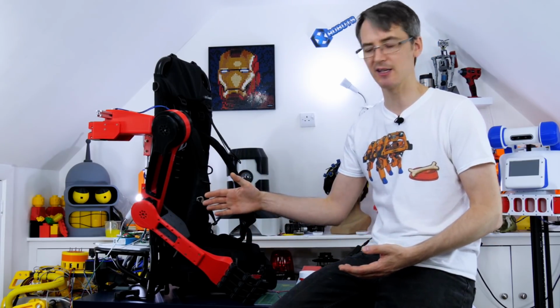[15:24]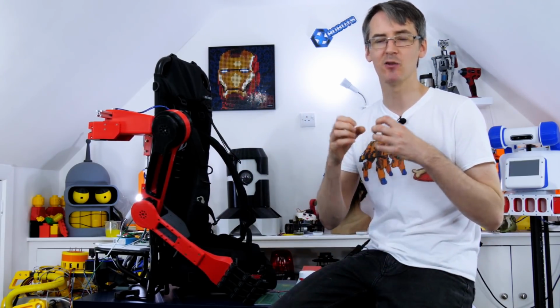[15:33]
I think I'd like to simplify this for the next stage though, probably to just a right arm forearm prosthetic with a hand that can do different postures, and then use more distinctive, better quality data going in, maybe not just from postures, but from EMG data and other sources, and see what we can get out of that.